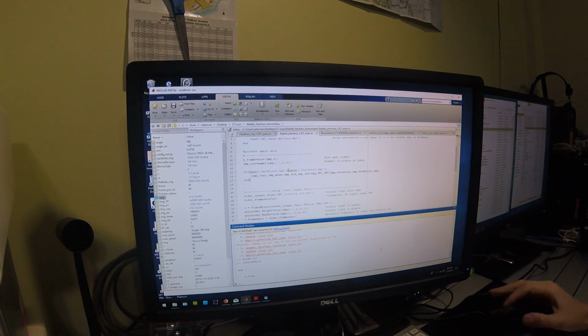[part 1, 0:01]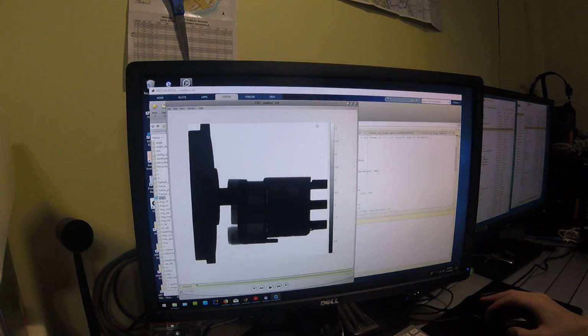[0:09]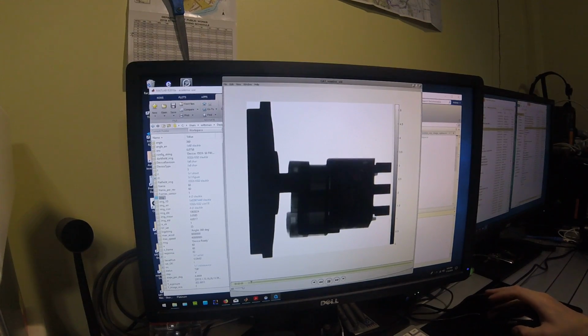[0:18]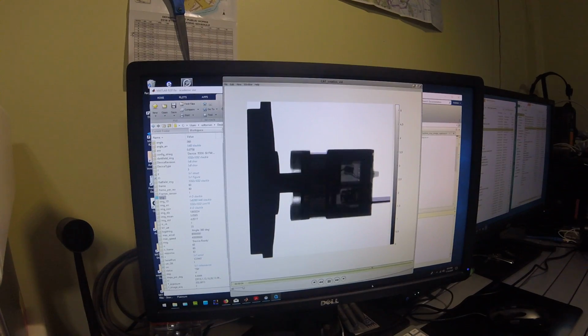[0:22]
Taking a look at the actual CAT scan data, first we'll have a look at the raw X-ray frames. And these actually have been processed for dark field and flat field correction. So these are the 60 frames of that switch that were taken. That's that switch base rotating around on the stepper motor.
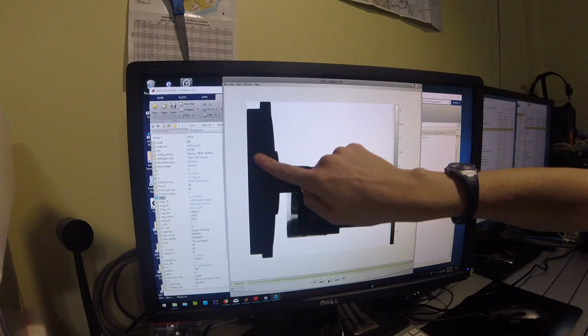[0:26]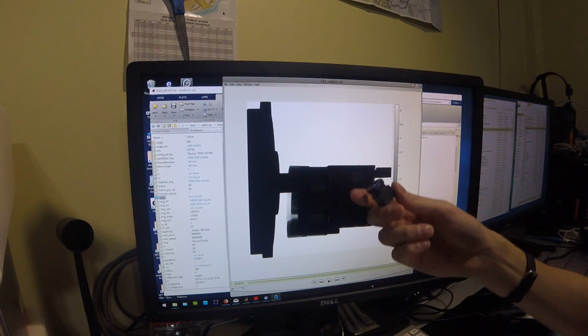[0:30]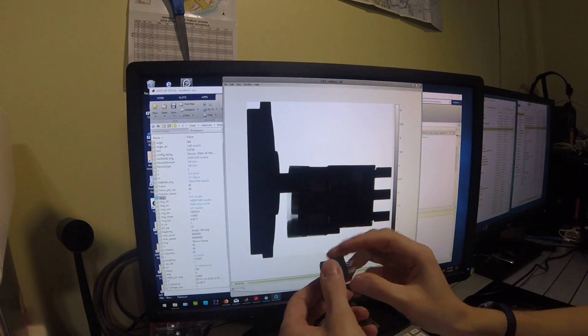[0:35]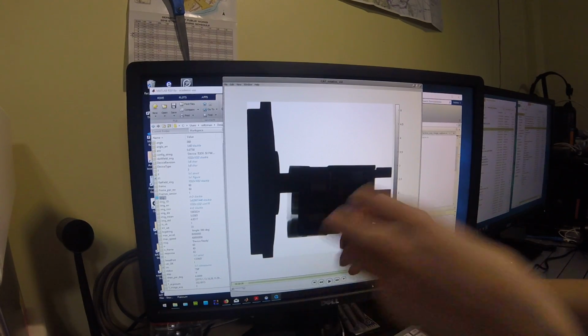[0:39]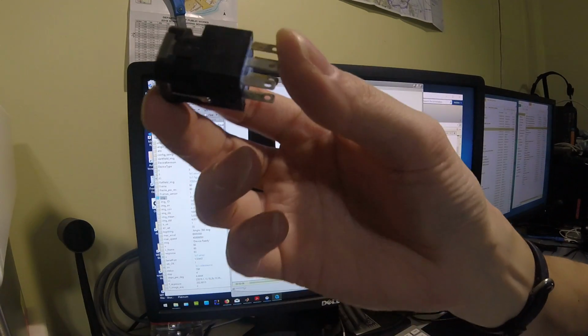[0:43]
So here is the stepper motor itself, the stepper motor drive shaft, and the switch. Here's the base of a similar switch. This one's slightly different in that it has two rows of solder tabs instead of one row of solder tabs. But this would be basically the device that is being scanned and being rotated around.
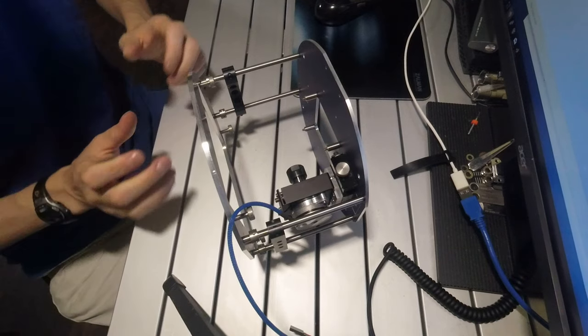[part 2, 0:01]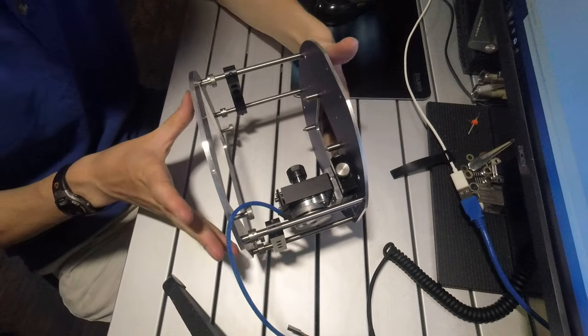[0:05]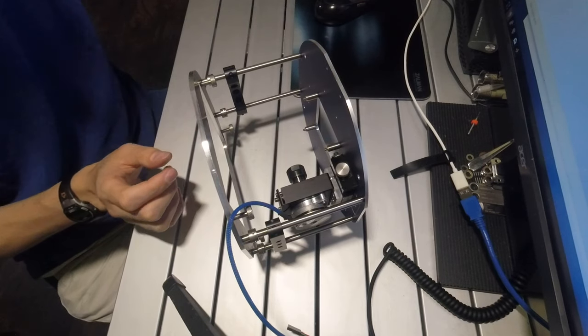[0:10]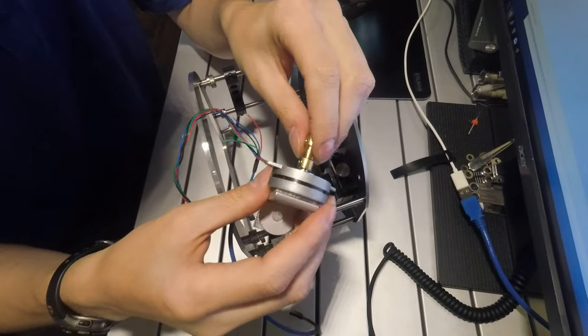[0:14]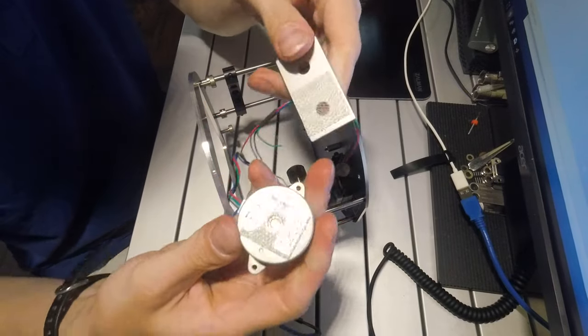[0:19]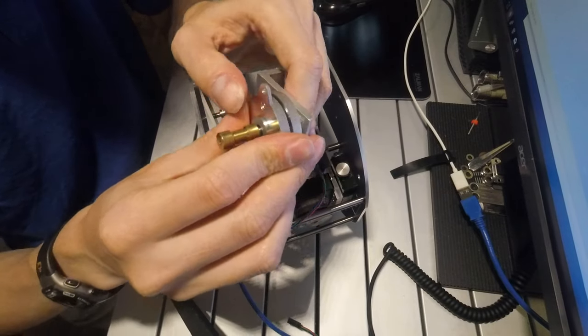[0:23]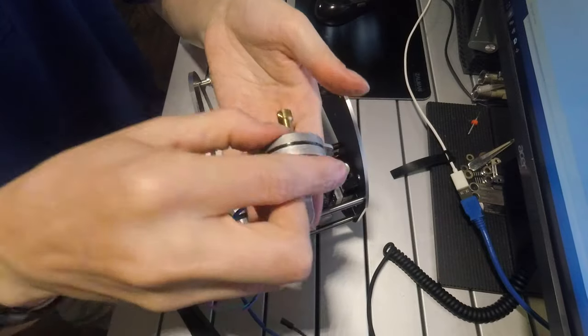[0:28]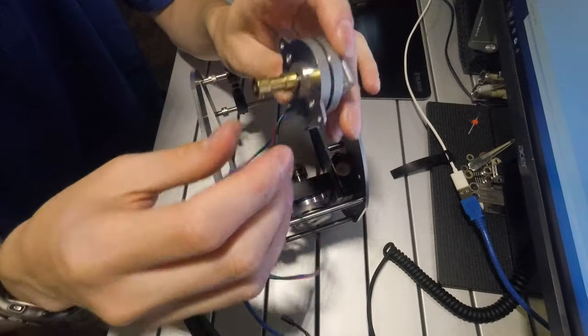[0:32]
Right, so the latest upgrade to the CT scanner is an insertable scanning stage for the Faxitron X-ray machine. Previously, the object to be scanned would be mounted on the spindle of a stepper motor, which was attached via 3M Dual Lock, basically a high-tech Velcro, to an L bracket, which was then 3M Dual Locked down to the base of the Faxitron X-ray imaging chamber.
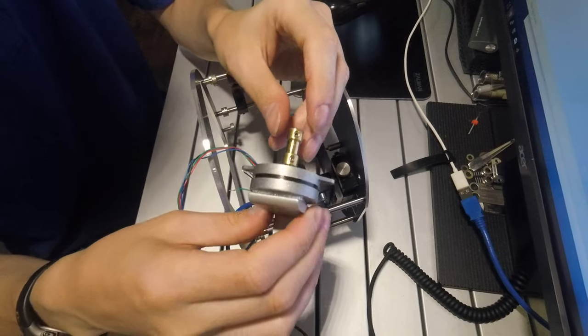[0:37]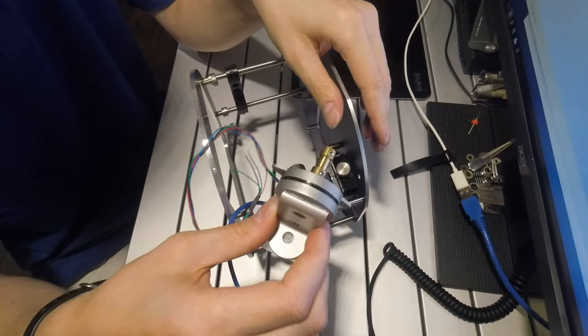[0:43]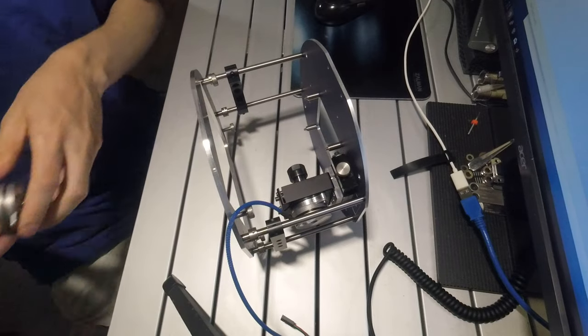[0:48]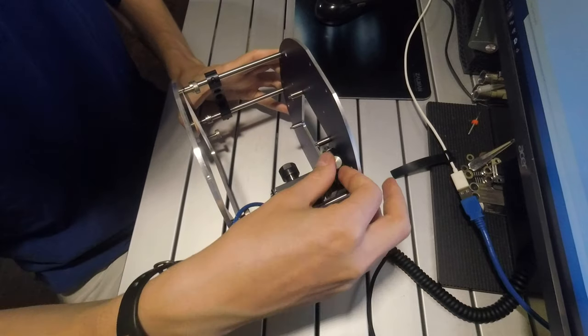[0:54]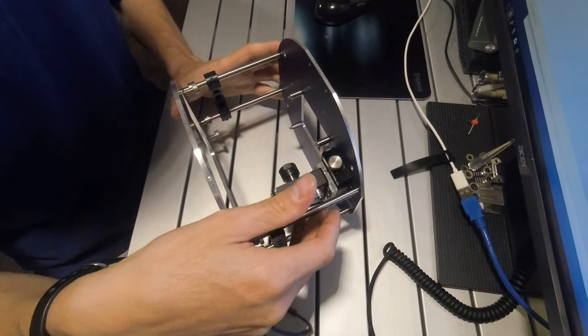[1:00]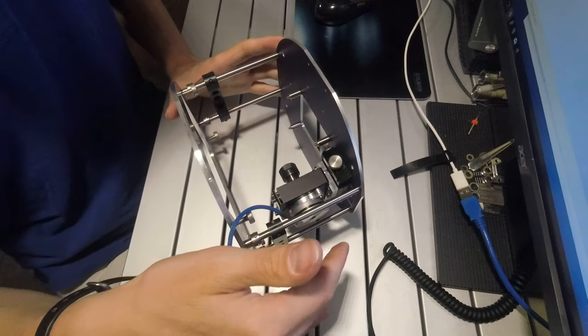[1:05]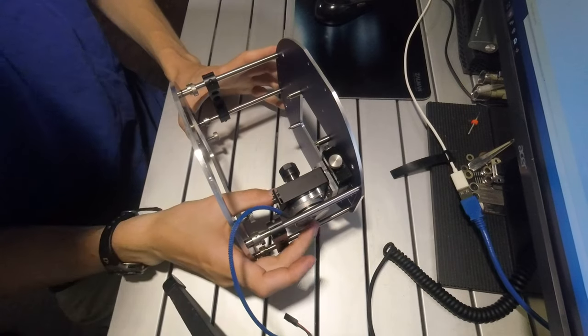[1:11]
Now, the problem with that is this: it's hard to get the rotation axis aligned perfectly with the middle of the sensor and perfectly aligned within angle, both up, down, and left, right. So to fix that alignment issue, I've designed an insertable stage, which uses translation stages and a kinematic optics mount to assist in the precision adjustment of the rotation axis of the stepper motor in order to make it perfectly perpendicular to the axis of the imaging sensor and perfectly centered.
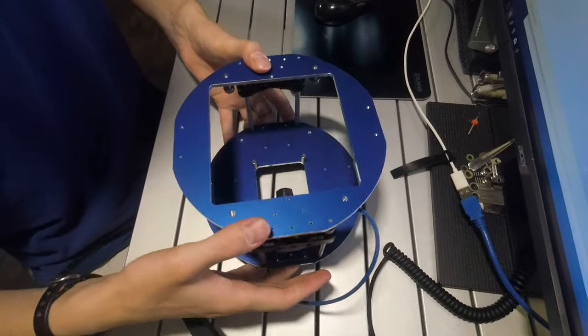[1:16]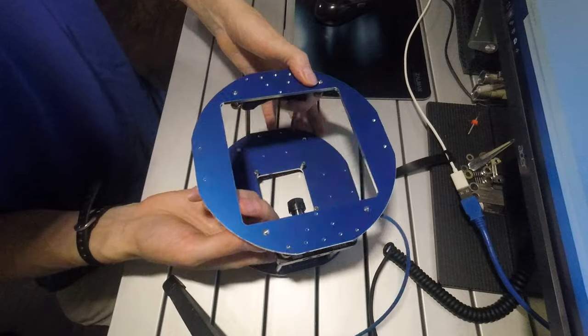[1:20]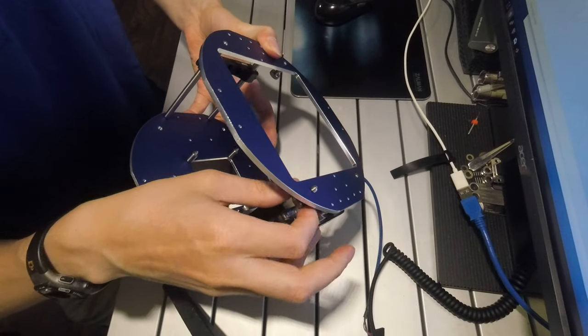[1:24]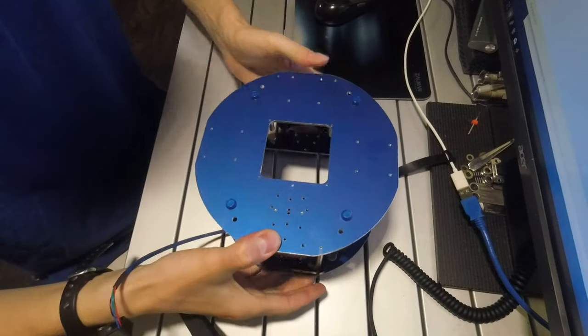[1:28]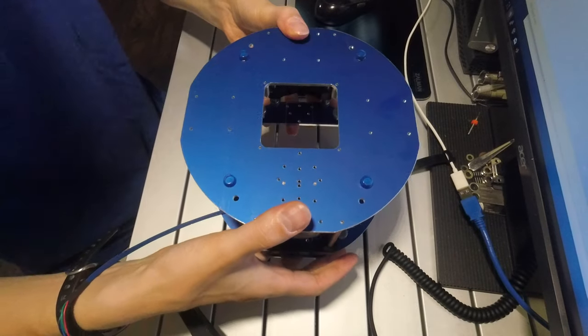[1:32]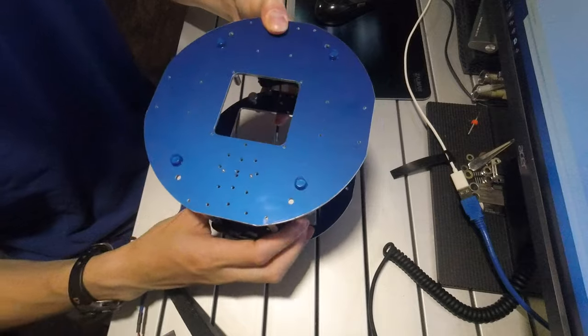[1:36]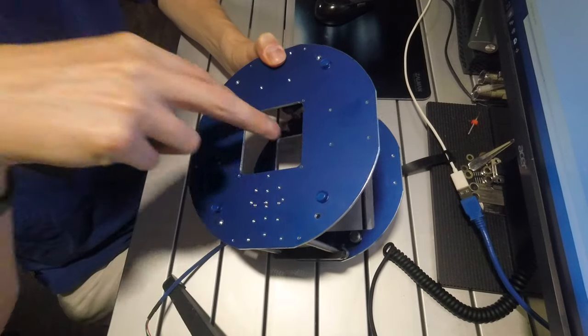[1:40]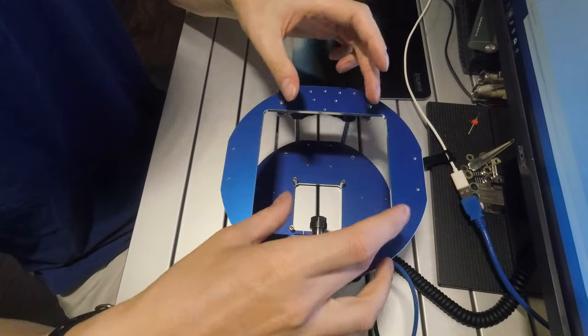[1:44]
Now, the stage is constructed out of two layers. It has a bottom layer with some set screws, which screw down to fix it into the base, and a top layer, which has some rubber feet, which is pressed upward against the top of the Faxitron DX50. It has a cutout hole in the center for the X-ray beam to come down, and a cutout hole in the bottom for the imaging sensor.
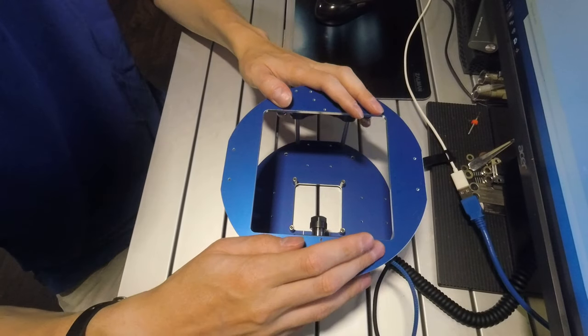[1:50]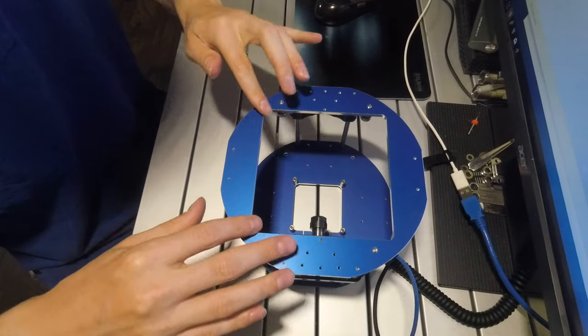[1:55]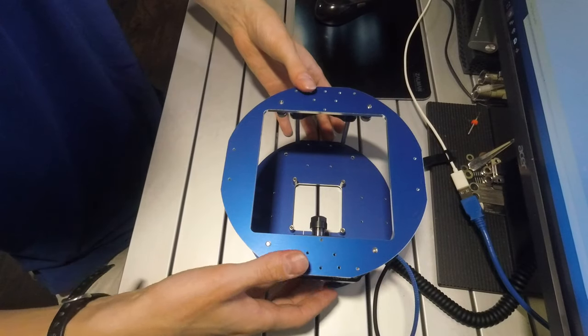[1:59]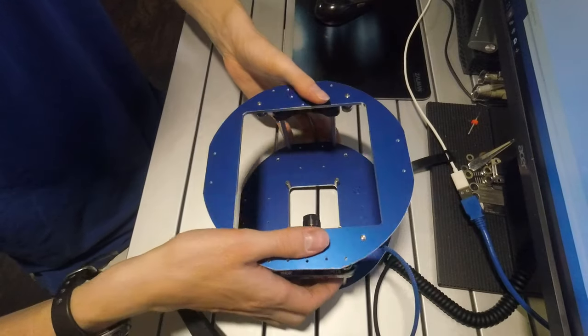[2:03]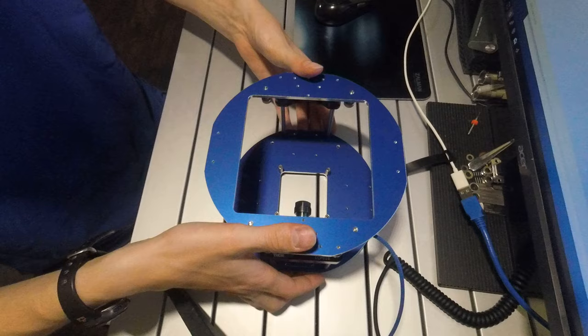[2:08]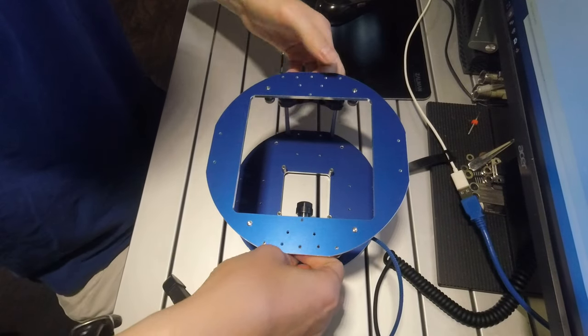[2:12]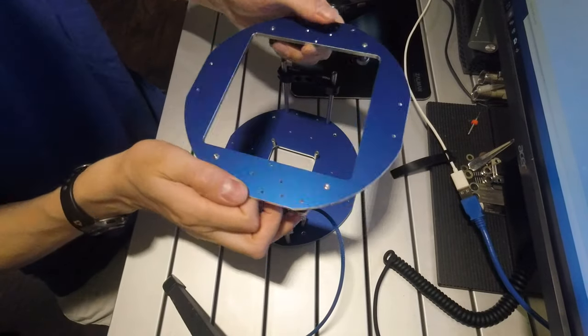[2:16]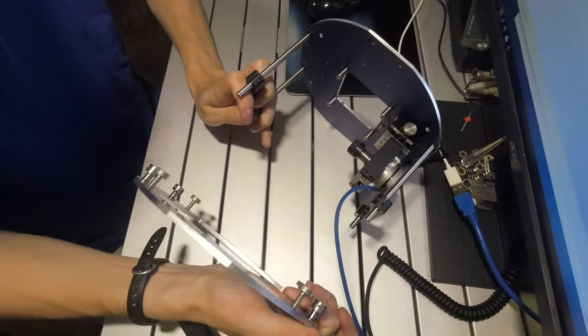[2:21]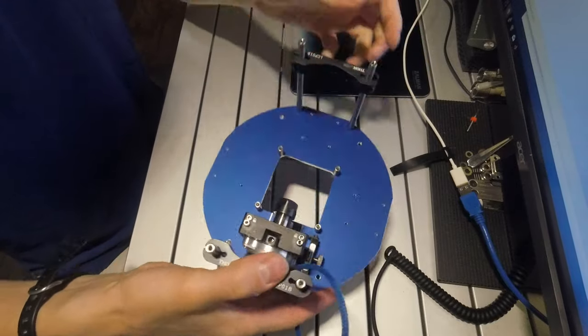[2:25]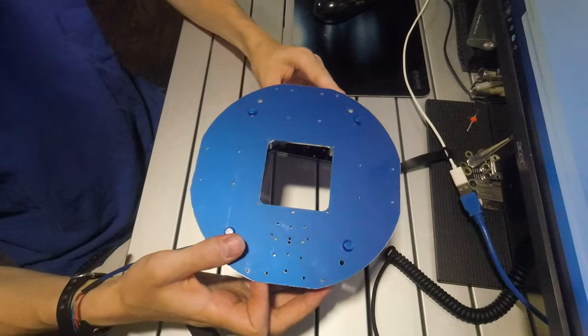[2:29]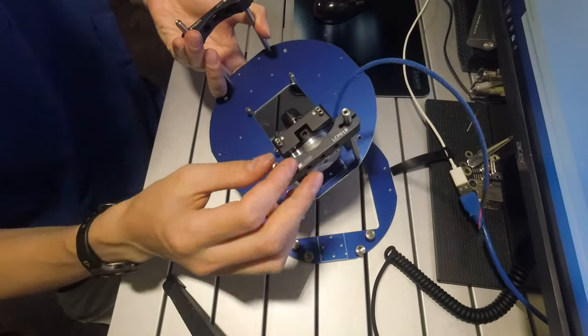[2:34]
Now, on the Faxitron DX50 that I'm using right now, it has a 50mm by 50mm imaging sensor. This is designed to also allow it to be used in the 120 by 120mm version of the Faxitron with the larger Hamamatsu sensor. Now, because the imaging chamber has a little lip in it, this is installed in two parts. First, they separate, so the bottom and top of the stage come apart. First, the bottom is inserted in, then the top section is inserted in and raised up a little, and then it comes down, and the ends of these rods insert in these sockets.
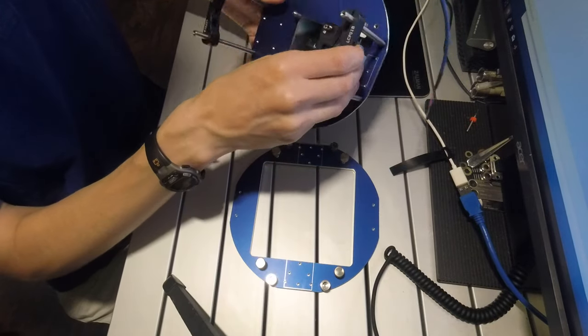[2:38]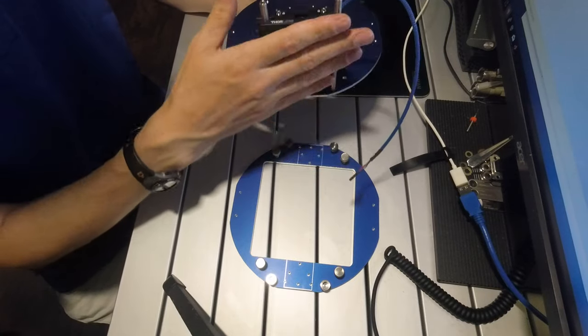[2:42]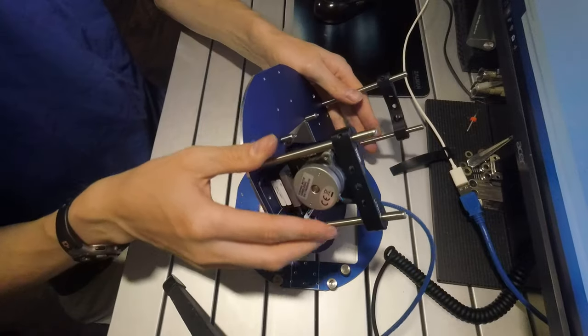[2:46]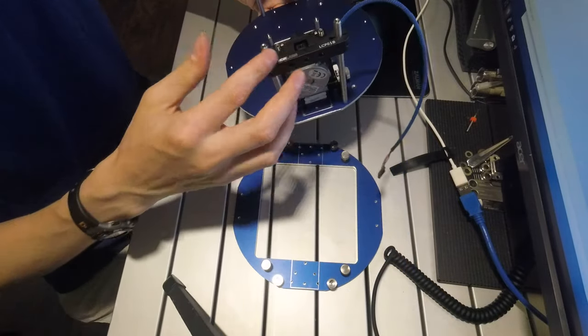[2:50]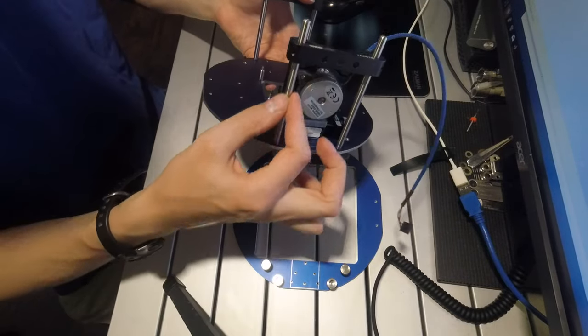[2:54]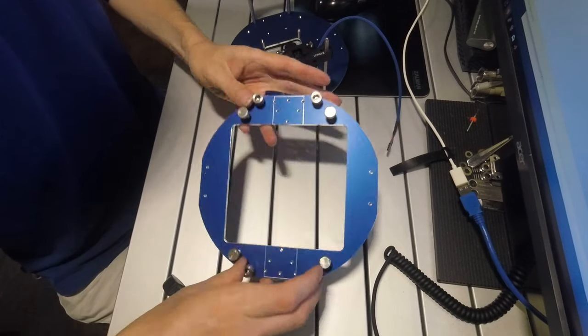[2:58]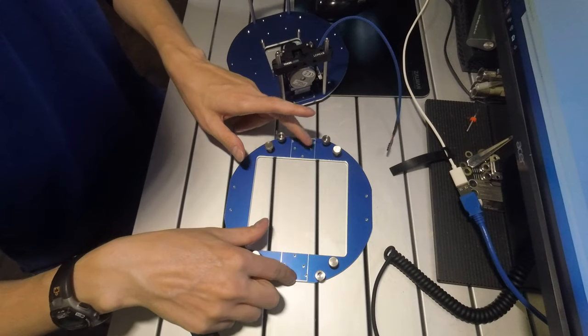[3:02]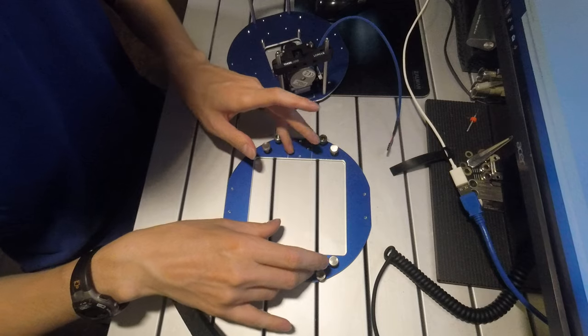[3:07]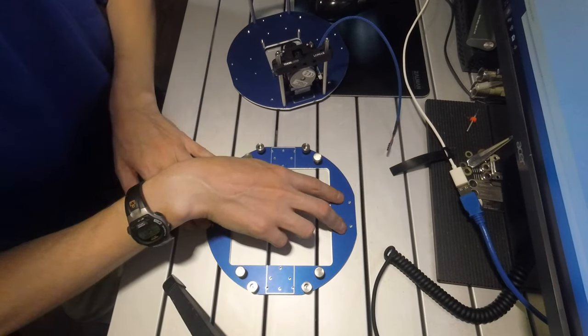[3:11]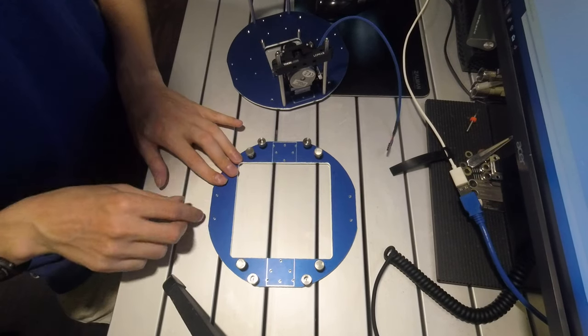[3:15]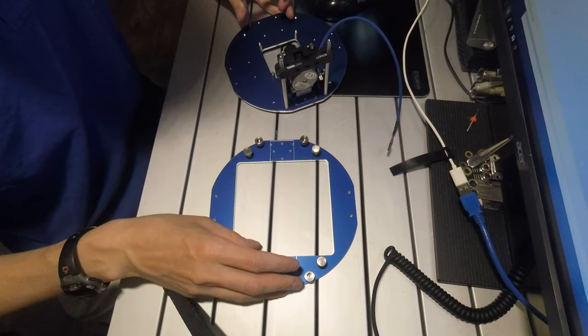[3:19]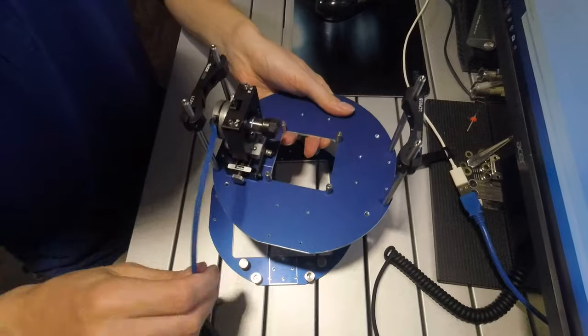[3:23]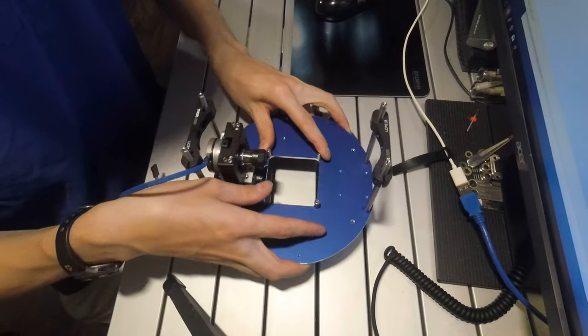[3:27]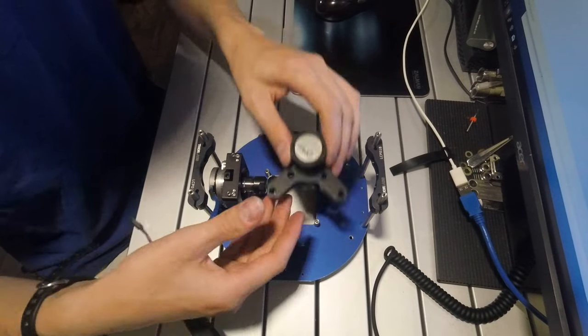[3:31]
Now, all of this mounting hardware, these are Thorlabs cage components. So the two sets of two bars on either side to hold the two stages apart are 60 millimeters apart in the Thorlabs 60 millimeter cage system, which uses the 4 millimeter rods, and then these sockets are also for the cage system. It has two mounts on the bottom for a Parker linear stage, which are not used yet but are available for future upgrades, and it also has two sets of 4-40 threaded holes. Each of these are 30 millimeters apart to hold Thorlabs' 30 millimeter cage system components. And on the top, it has a 60 millimeter cage frame here to assist in the installation of a collimator.
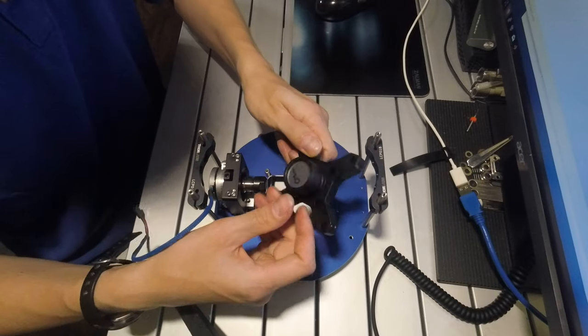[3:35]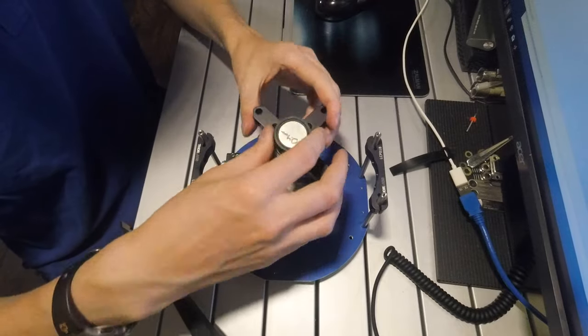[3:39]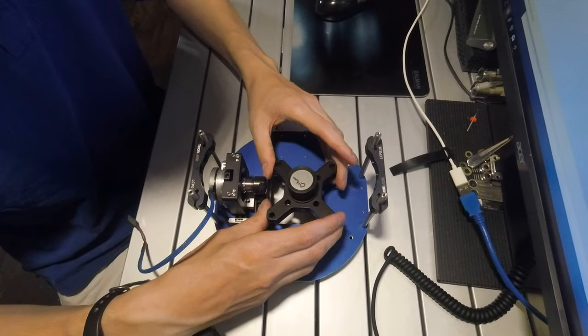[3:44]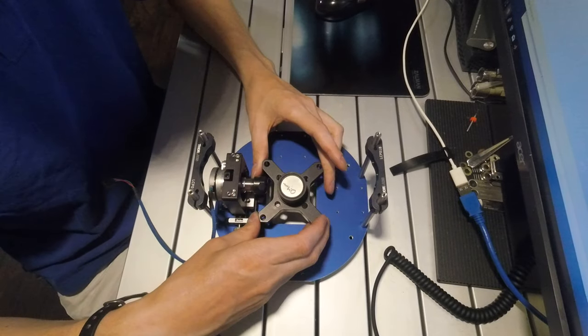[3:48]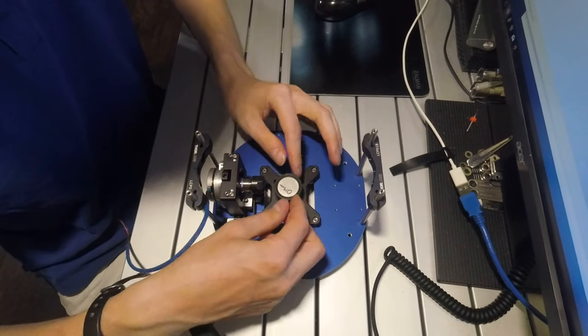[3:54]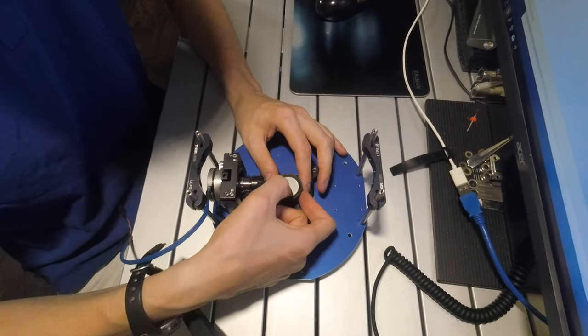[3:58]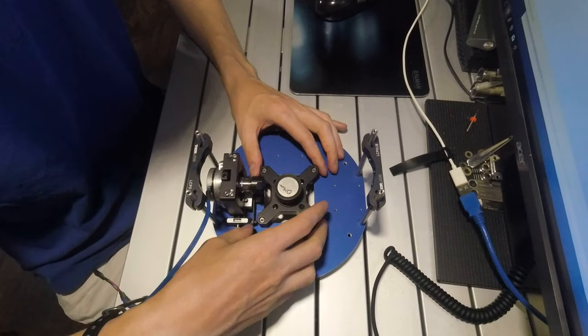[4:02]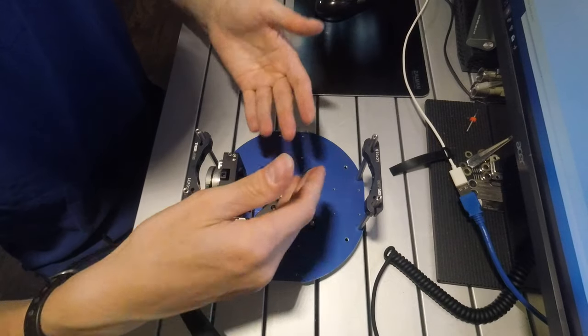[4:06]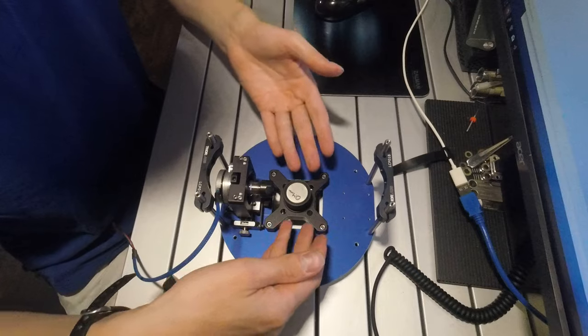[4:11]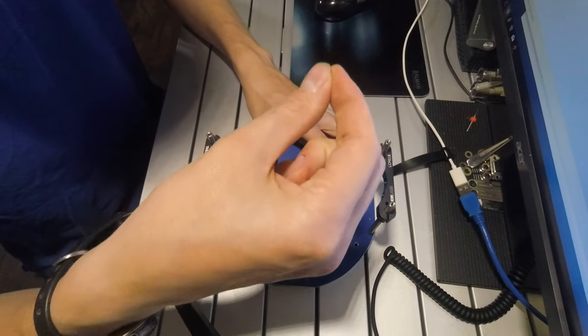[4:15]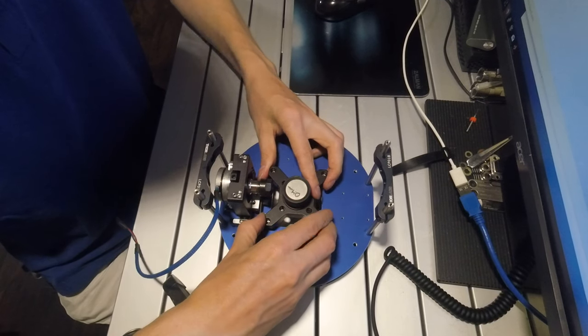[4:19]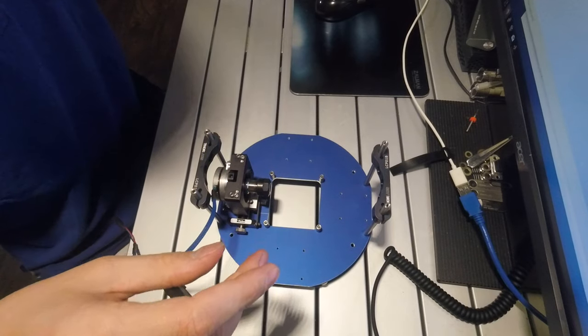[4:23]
Now, the collimator will be used for future analysis of materials. Hopefully, I'll be able to do some X-ray fluorescence analysis by installing a cadmium zinc telluride or other energy-sensitive detector. So when this would be installed, this would basically restrict the X-ray beam with a 0.4mm aperture. So you just have a needle-fine beam coming down right in the center of the sensor. So you could, like, take an X-ray of a material or object, adjust it so whatever you want to analyze is in the center of the sensor, then insert the collimator, and then put the X-ray beam onto that and detect X-ray fluorescence for materials analysis.
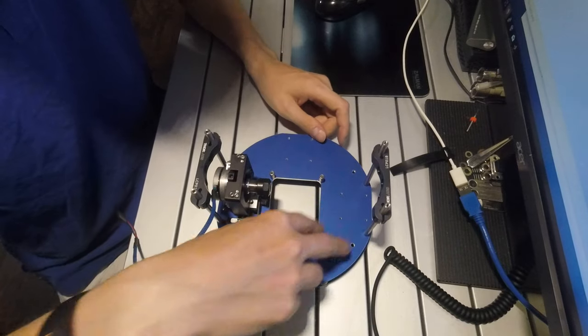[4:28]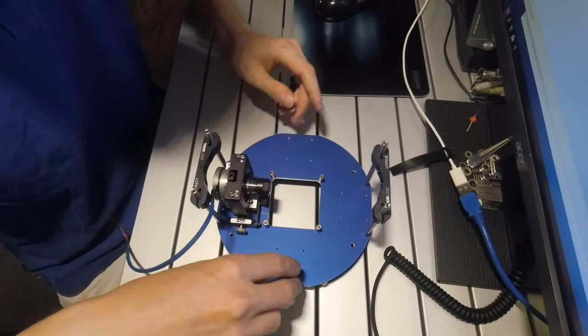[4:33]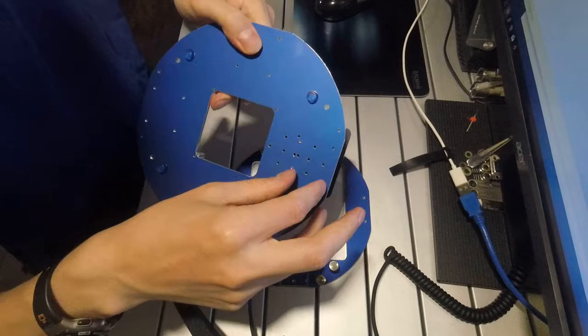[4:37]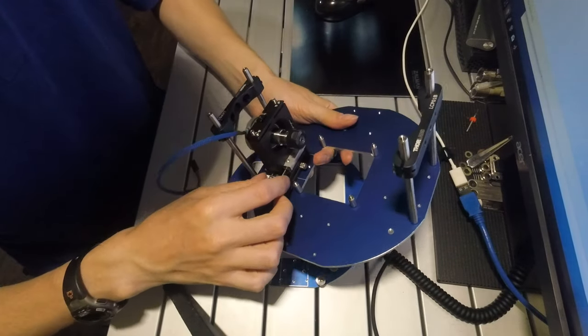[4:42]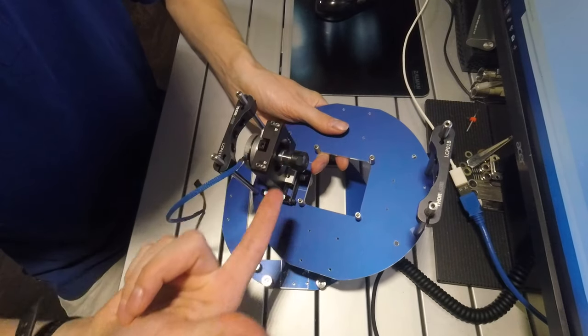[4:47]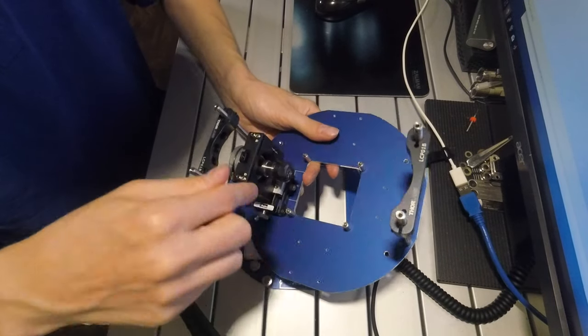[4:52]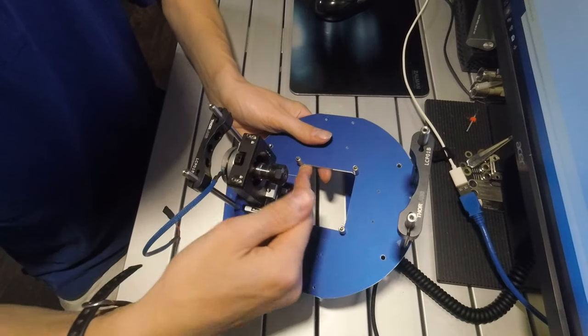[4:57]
And this also has four sets of four 30mm holes for Thorlabs' 30mm cage plate. The other one is under here, so this also has two positions for the Parker stage. So with the Parker stage, you can turn the adjuster knob and drive the stage in and out of the machine to align the center of the rotation axis with the center of the X-ray sensor, and you can also adjust the tilt of the stepper motor up and down and left and right.
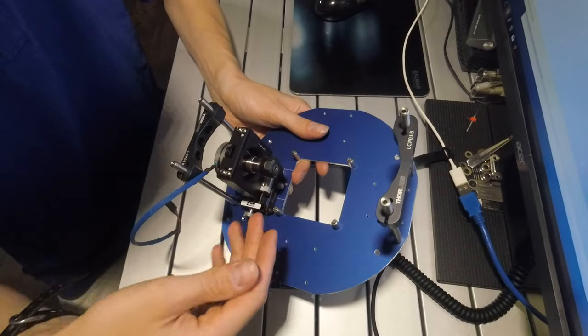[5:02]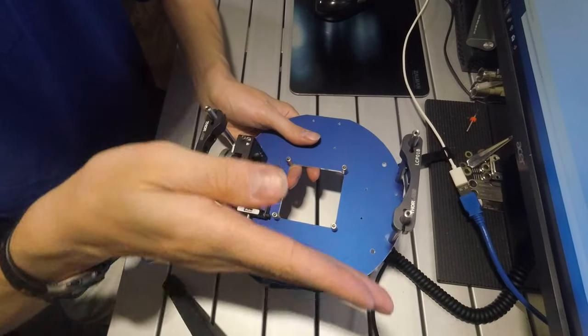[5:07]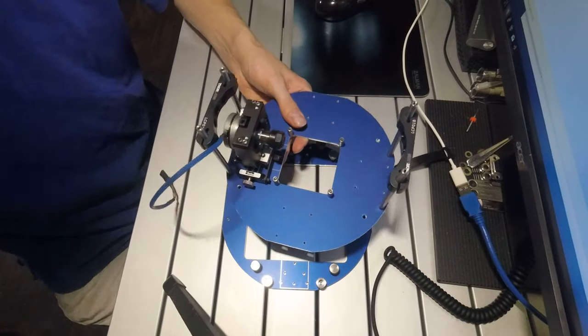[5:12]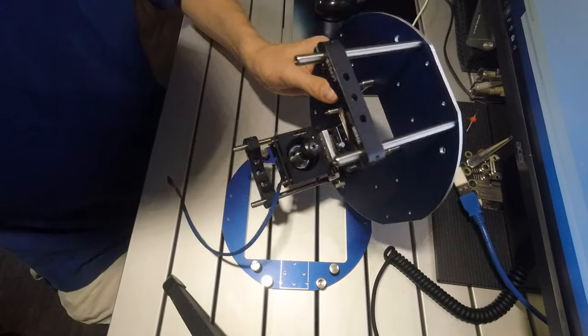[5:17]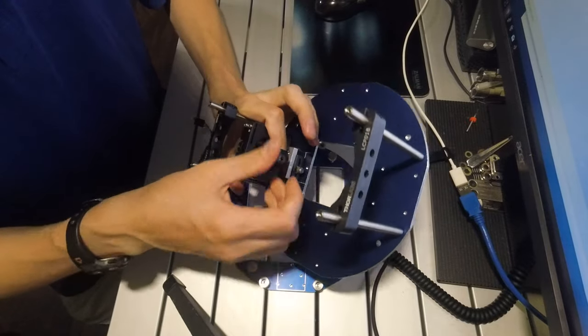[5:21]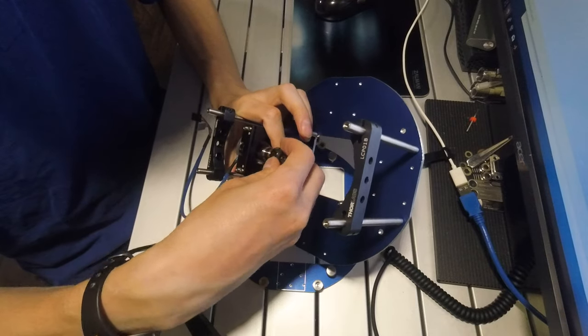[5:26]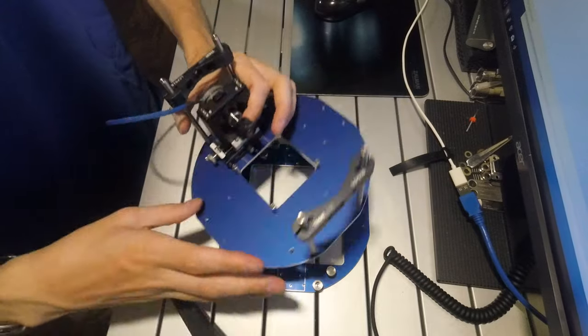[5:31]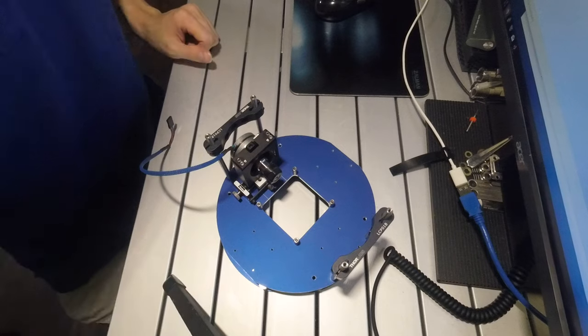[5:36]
So that not only is it aligned in the center, but it's also aligned perfectly perpendicular to the y-axis of the sensor. And instead of just having a set screw like on the old stepper motor mount, this now has an ER11 collet system. Right now it's outfitted with a 1/8-inch collet, but the collets are removable, so this gives you better flexibility in mounting different sample sizes. So next I'll have another video showing how to insert the stage into the Faxitron X-ray system.
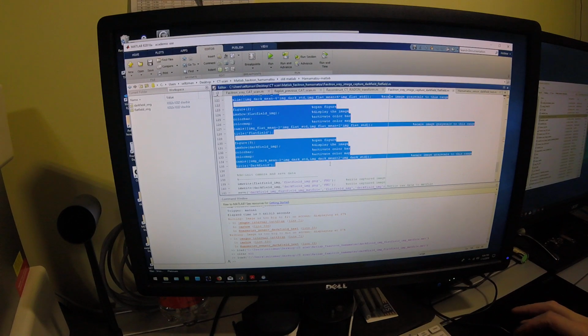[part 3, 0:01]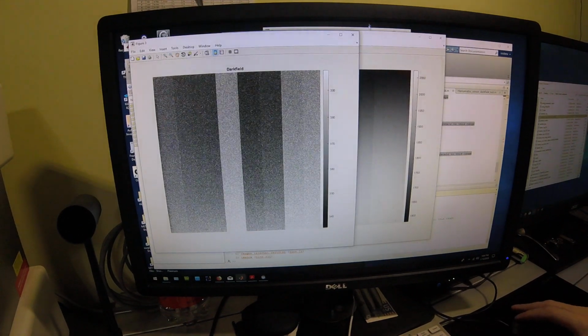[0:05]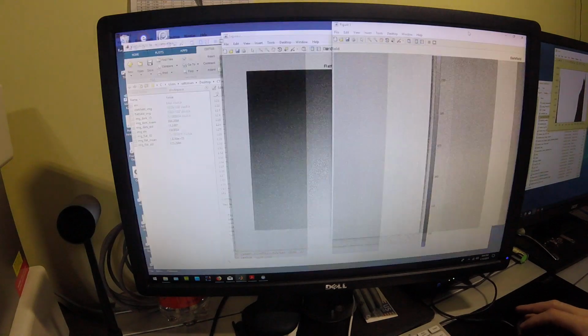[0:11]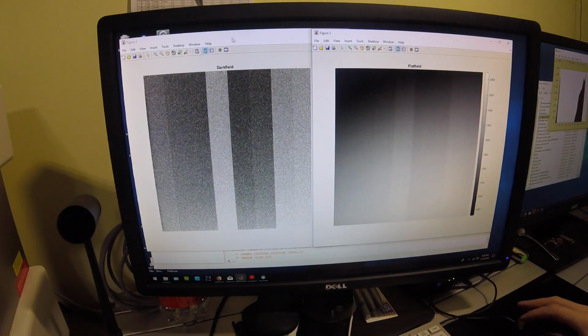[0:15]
Plotting routines into the input. Okay, so now what we have is two images. We have the Darkfield image here and the Flatfield image here. So the Darkfield image, again, the color axis is just expanded. This is from around 330 to maybe 400
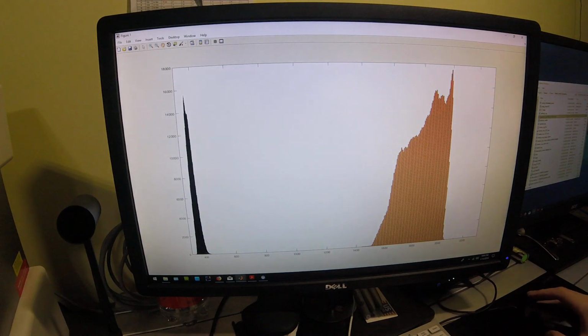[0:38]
counts for the Darkfield, and the Flatfield is from around 1550 to 2100 counts. If we take a look at a histogram, we can see the two different histograms between the Darkfield imaging and the Flatfield imaging. So anything between here and about here is useful signal, which can be used to actually generate that image data, and above that, you're not going to get any counts above that.
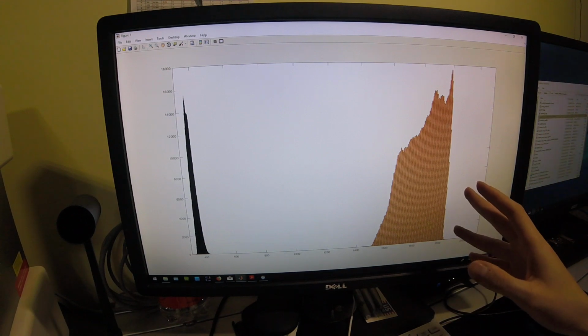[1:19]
That's just a limitation on the power of the X-ray tube. This is a very low power X-ray tube. It only goes up to 35 kV and 0.1 milliamps. So it's very, very low power. To get this to around 65,000, you'd need around 32 times the photon flux to saturate the detector.
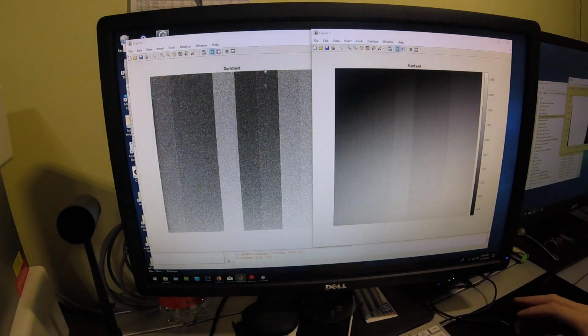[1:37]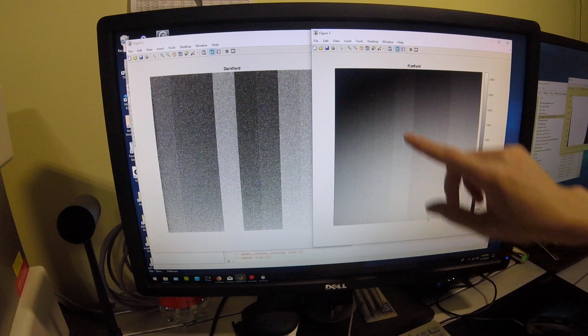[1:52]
So it's well below the maximum exposure that the detector panel can handle, but it still has sufficient power to generate images with very low noise after correction from the Flatfield and Darkfield. So the Darkfield image you've seen before, that's just variation in dark current on the CCD. The Flatfield image, on the other hand, you can see variations in sensitivity over the spatial area of the detector.
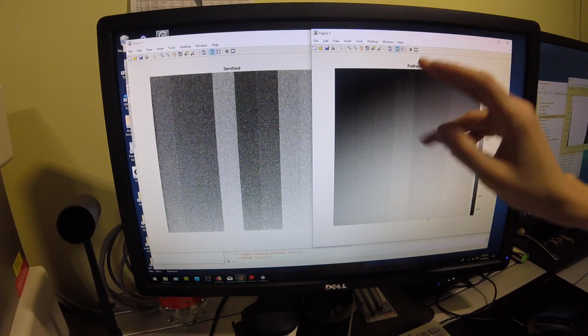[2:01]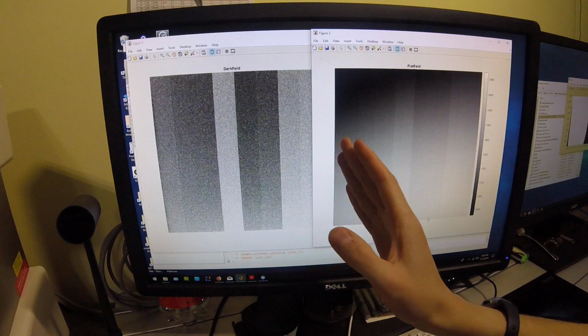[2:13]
This fall off here is likely not due to heel effect, since this is on the up-down axis. Any heel effect would actually show up on the left-right axis, because the angle of the anode cut would be on the left-right, so if there was any heel effect, you'd start seeing it towards the edge of the image, not towards the top. So this is likely due to variations in sensitivity of how much of the cesium iodide scintillator on the detector surface.
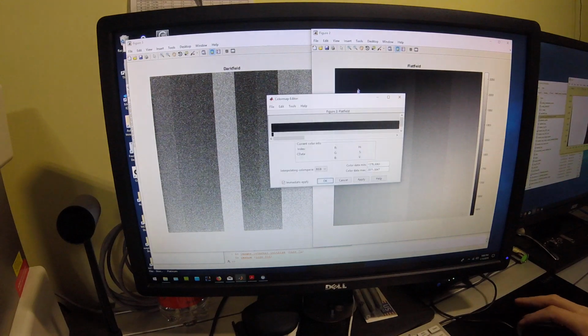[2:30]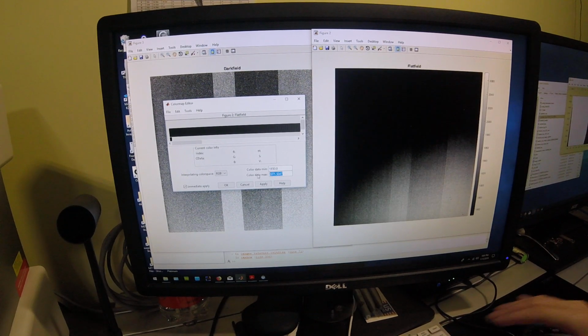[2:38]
Now, one of the things that I do want to show you is that if we open the color bar editor and zoom in really far on the color axis, just go from 1850 to 1940, 1950 perhaps. Okay, and then we're going to zoom in on the Flatfield image. Just maybe a little too far in.
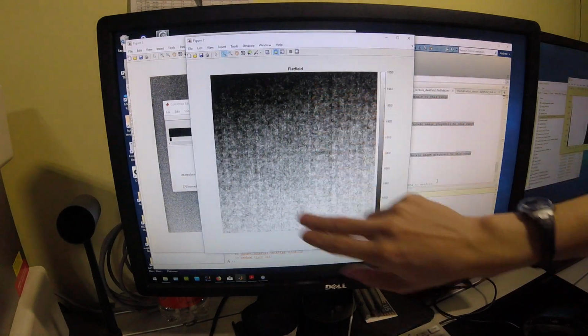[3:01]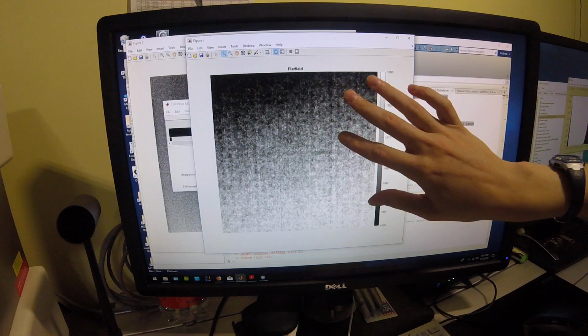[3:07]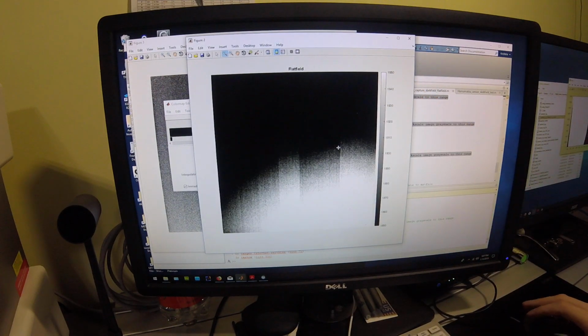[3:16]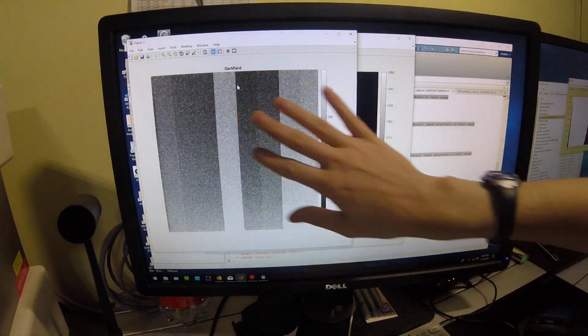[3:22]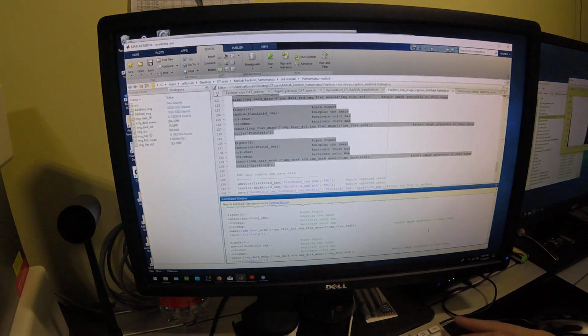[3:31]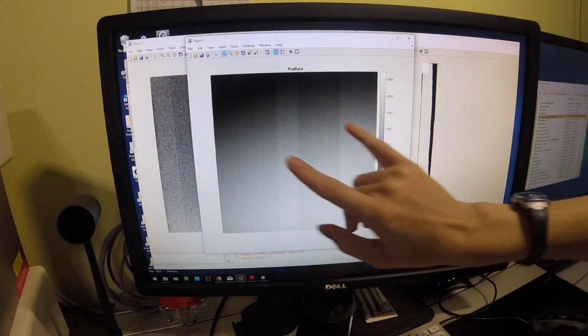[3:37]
Alright, so what you can see here is a hash-like pattern on the image. And this is actually the X-ray absorption of that carbon fiber plate, that carbon fiber sheet that's used to protect the image sensor. And by performing that Flatfield Darkfield correction, you can remove both that Darkfield dark current and the Flatfield inhomogeneity in the X-ray sensitivity. You just remove that mathematically. You can also see that Darkfield variation showing up in the Flatfield image.
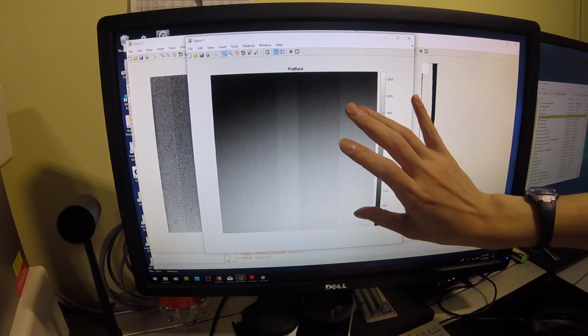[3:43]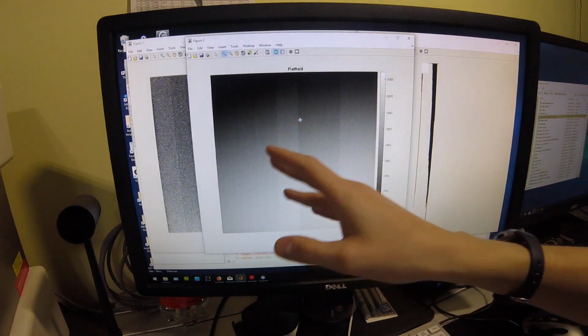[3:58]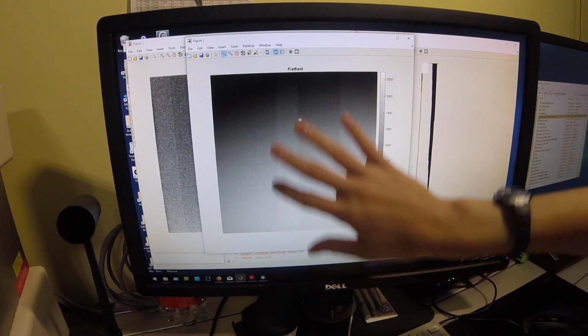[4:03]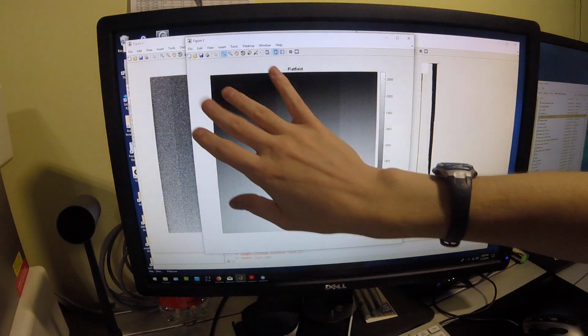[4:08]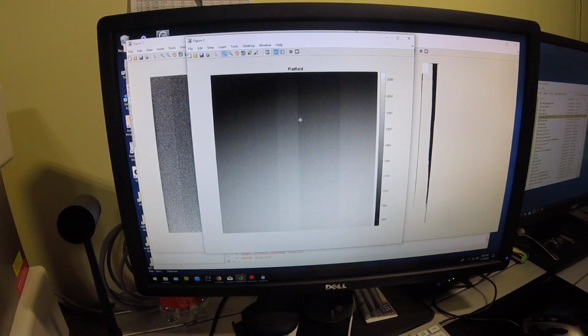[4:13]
So to perform that Flatfield Darkfield correction, what you do is you take an image of an actual object. You would subtract the Darkfield, which removes any dark current, and then you divide that by the Flatfield minus the Darkfield. So that would compensate for that inhomogeneity in any X-ray beam effects and in effects of the sensitivity of the detector and the carbon fiber plate. So that would give you a much clearer image. So that will substantially reduce the noise in the X-ray system.
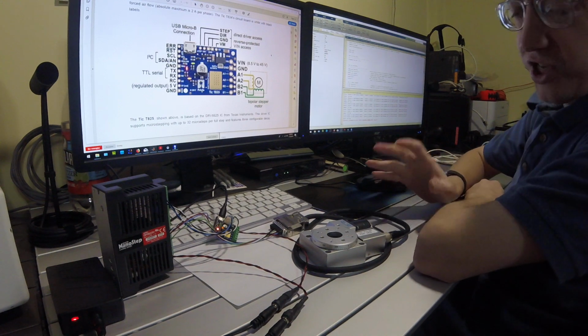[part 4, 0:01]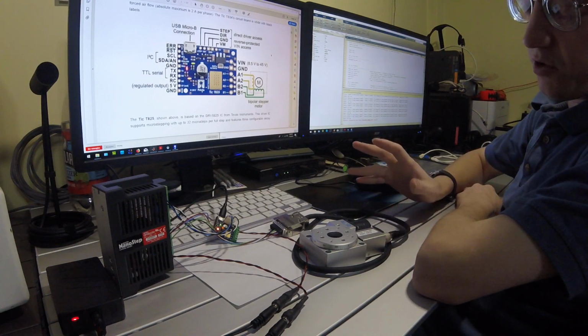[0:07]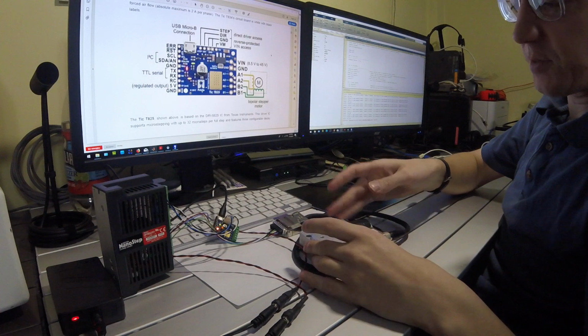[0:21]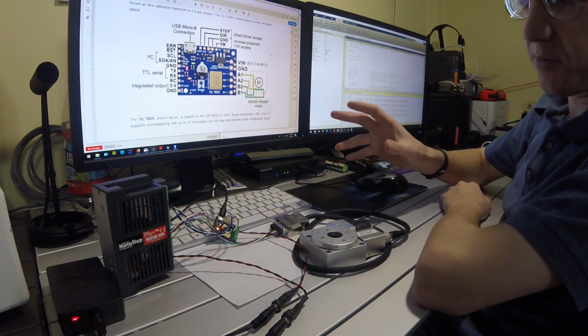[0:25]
So continuing on with the development of the CAT scanner conversion of the Faxtron X-ray machine, one of the things that we're going to need to do is to integrate an automated rotational stage assembly into the X-ray cabinet in order to rotate the object which is being scanned. There's several possibilities to do this. One is with a stepper motor with a right angle gearbox. The other is with just the stepper motor itself.
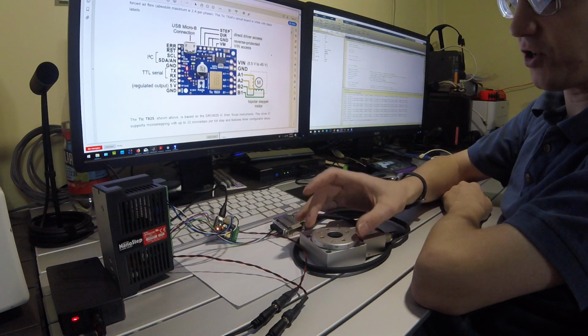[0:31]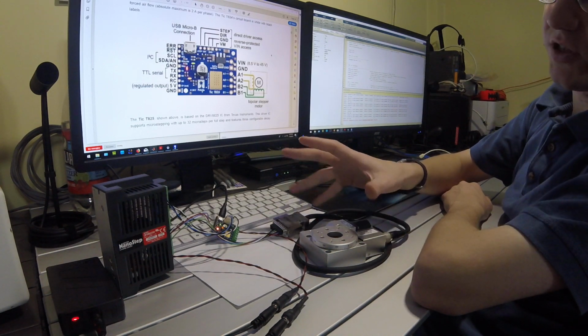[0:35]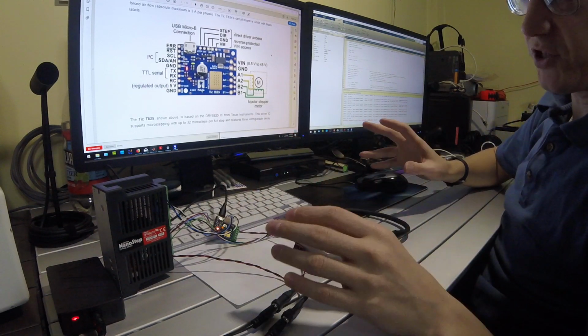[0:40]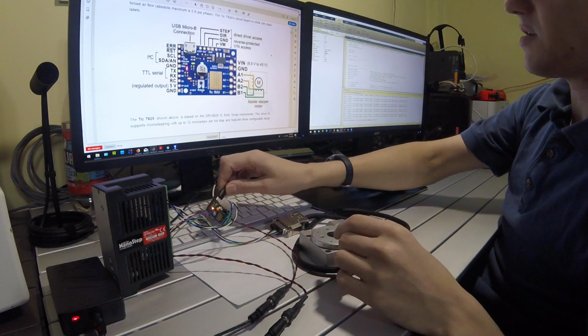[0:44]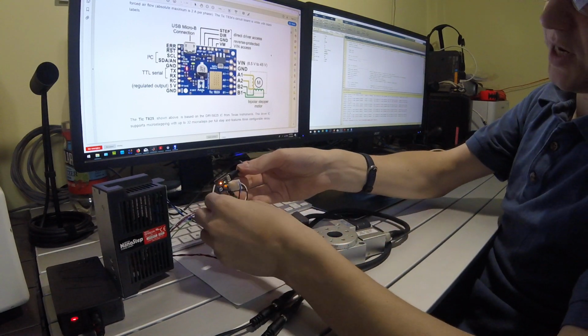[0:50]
The right angle gearbox is obviously going to have a lot more physical capacity to scan larger objects and also potentially a finer resolution, whereas the single stepper itself will be smaller. So to drive the stepper, I've come up with an architecture that uses the Pololu TIC T825 stepper controller. It's a small USB-based board.
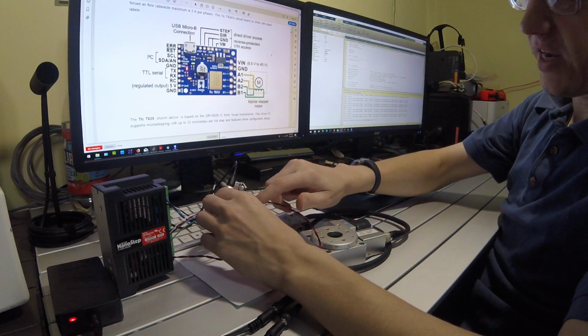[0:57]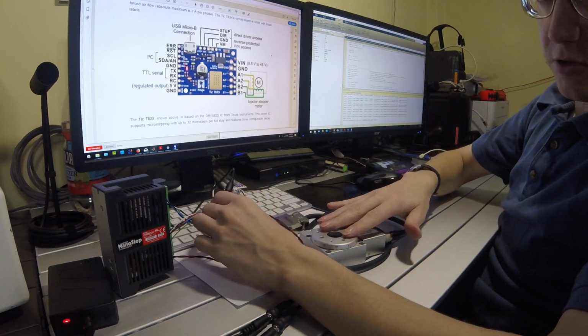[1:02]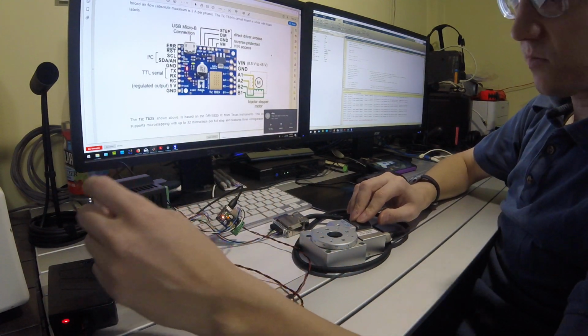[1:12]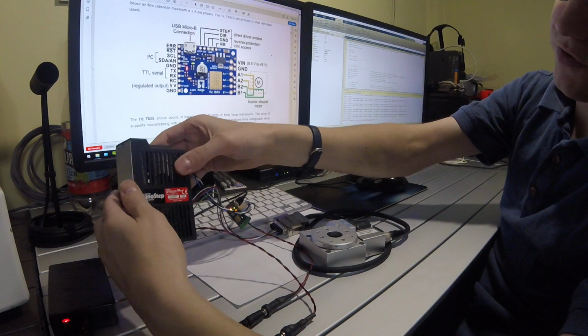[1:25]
Integrated onto the board, there's a two-phase stepper driver for a bipolar stepper motor. However, for this particular stage that I'm testing right here, this has a five-phase motor. So to run that motor, I'm going to need its own independent driver. And so this was a motor by Vexta, and Vexta is pretty much the only manufacturer of, well, at least the most common manufacturer of five-phase steppers. So they also have stepper drivers. So this is a Vexta NanoStep five-phase driver.
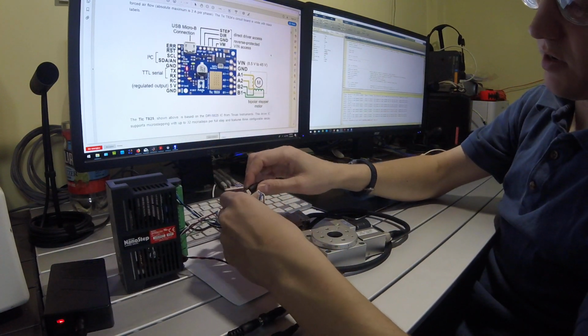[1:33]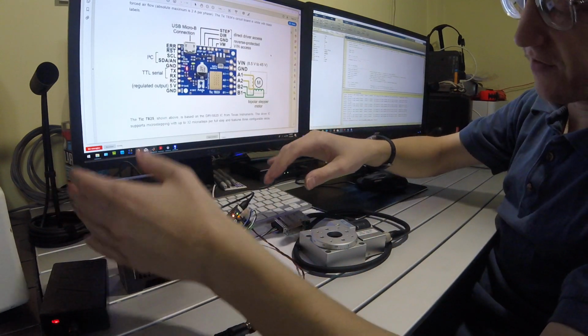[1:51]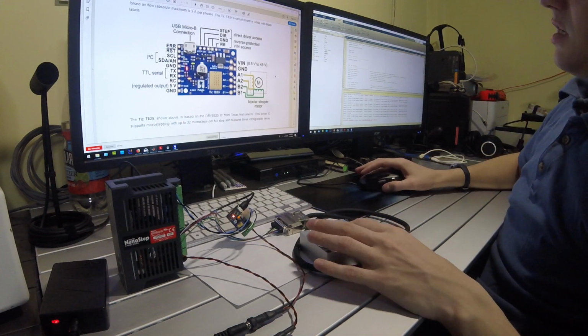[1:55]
The Pololu TIC controller does have step and direction line outputs. So these step and direction line outputs are just going to the NanoStep driver. So that's basically the board just has its own two-phase driver on there, but it's not being utilized when driving this particular stage. So the five-phase driver is then just put onto the stage itself. Now here's the TIC controller.
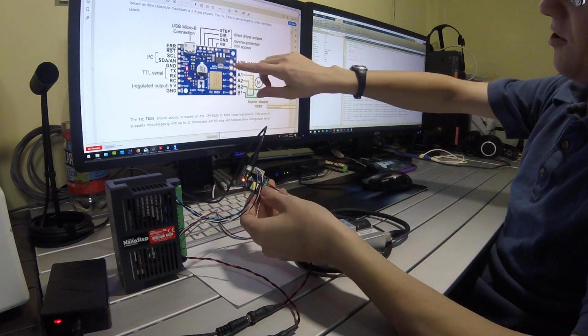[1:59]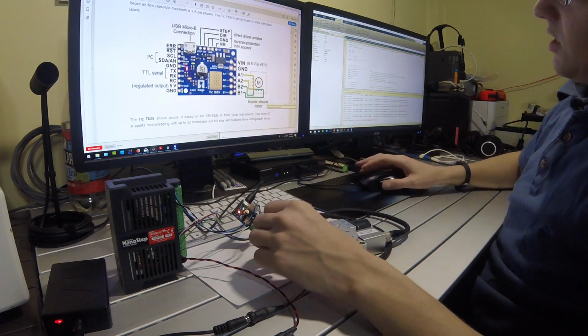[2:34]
So there's the header on this side for power in, which requires 8.5 to 45 volts to drive the stepper controller. And then it also has the outputs to the two-phase motors if you're using a two-phase system. Then the step and direction outputs are at the top, and then you have inputs for remote stepper control if you wanted to use a RC servo input or TTL serial or I2C or analog input. And then it also has the USB interface, which you can drive the stepper controller via a computer. So Pololu does have its own control app.
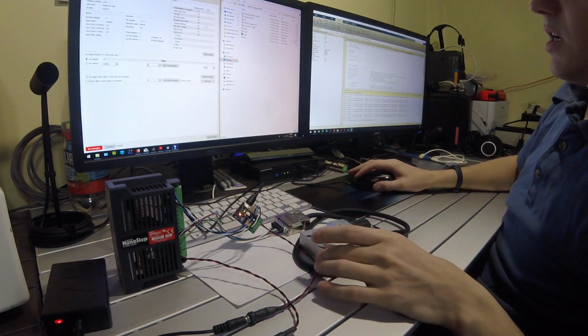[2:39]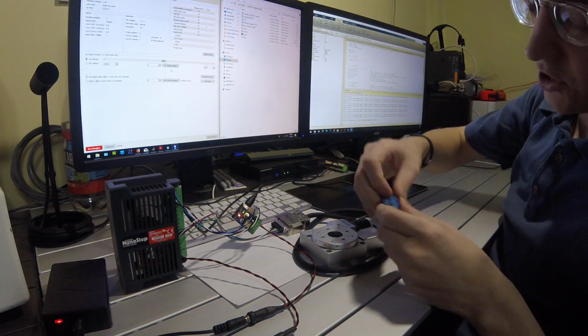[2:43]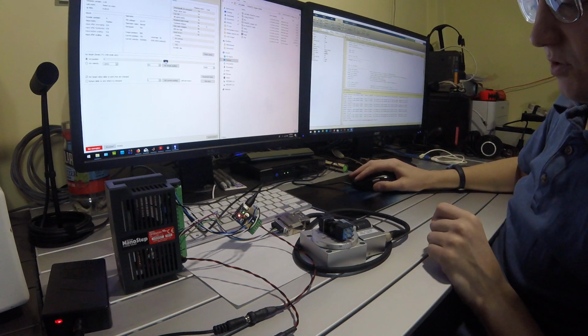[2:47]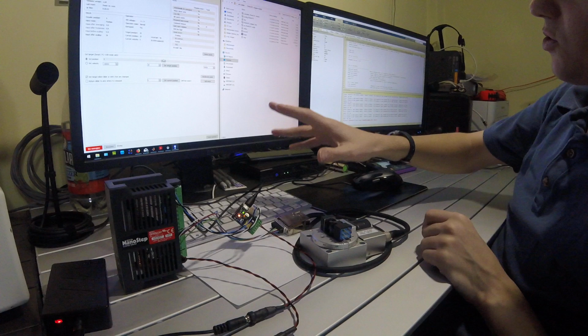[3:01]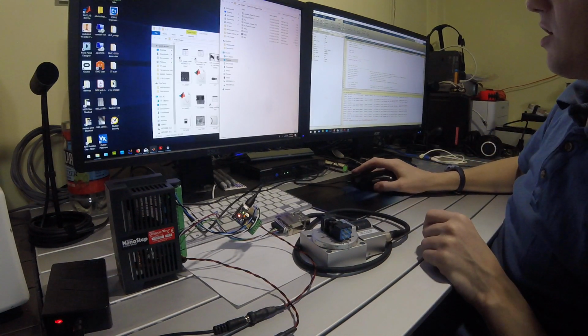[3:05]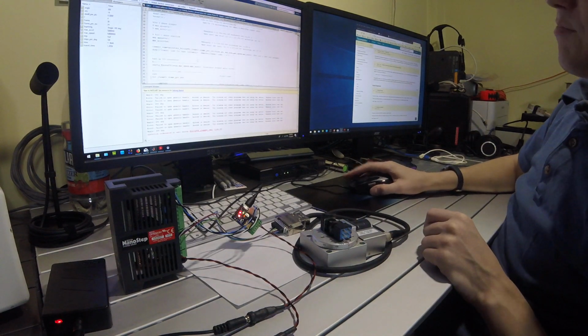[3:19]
So with this, we can control the stepper stage. I'm going to put a switch on top of this stage so you can see it rotate. So with this, you can command the stage to go to various positions and rotate. However, for the CAT scan, we're going to need to integrate this all into one software package. So the Pololu also does come with a command line interface, which is TIC CMD. You can access this over command line, or if you're using Matlab as a development environment, which I am, Matlab does allow you to send commands directly to the command line.
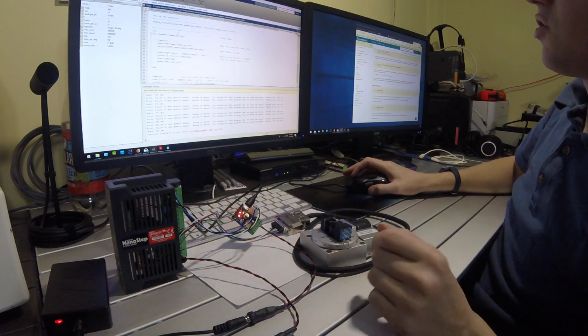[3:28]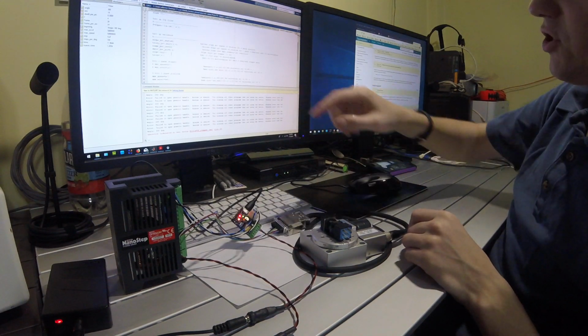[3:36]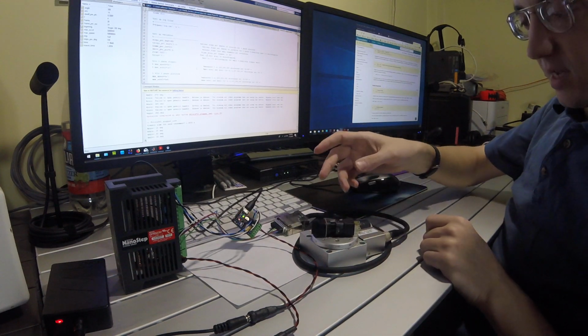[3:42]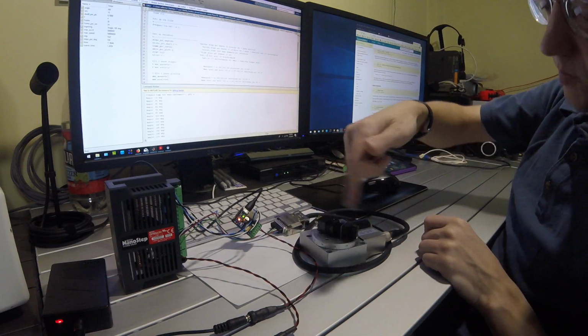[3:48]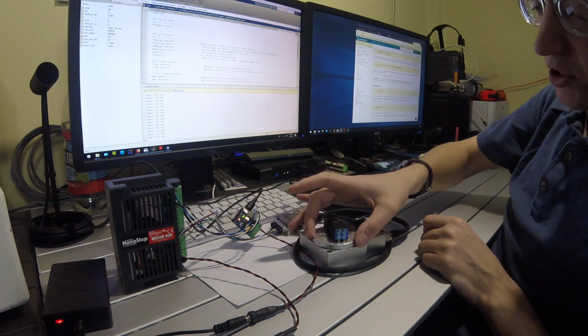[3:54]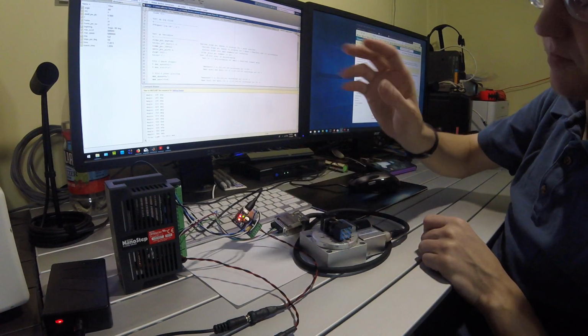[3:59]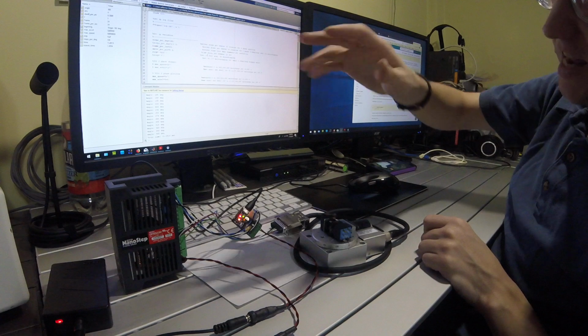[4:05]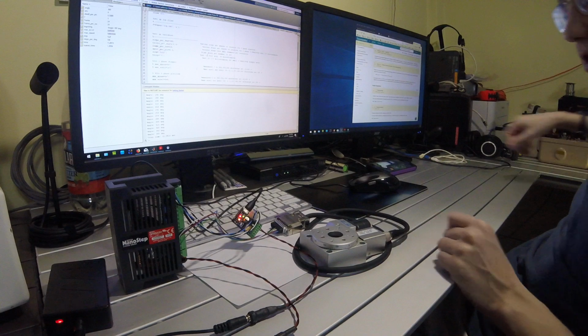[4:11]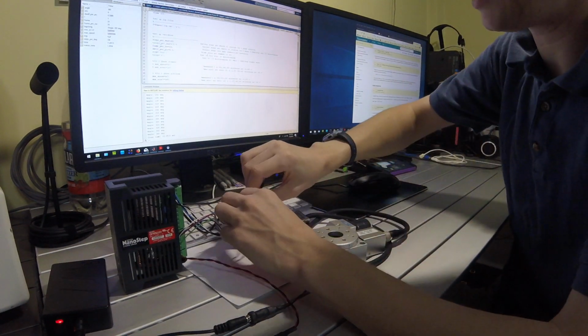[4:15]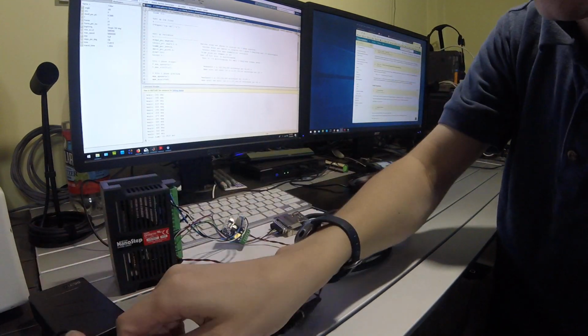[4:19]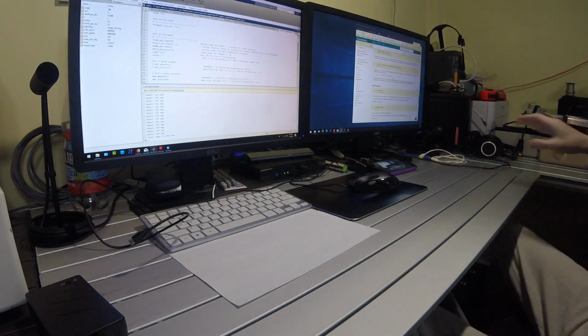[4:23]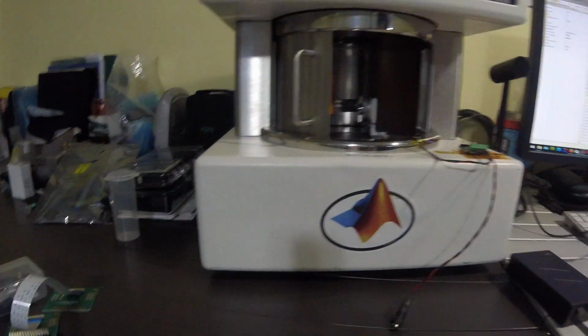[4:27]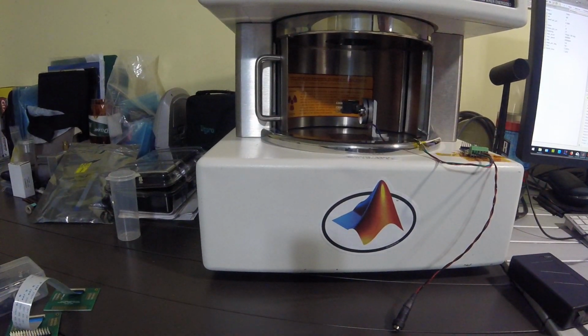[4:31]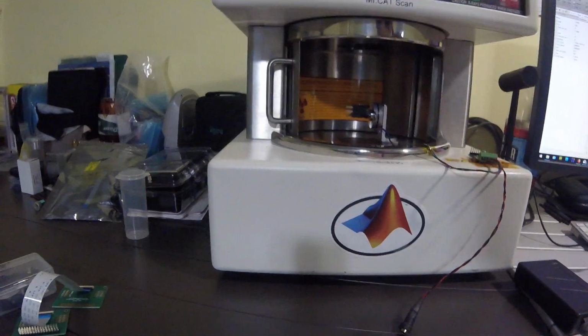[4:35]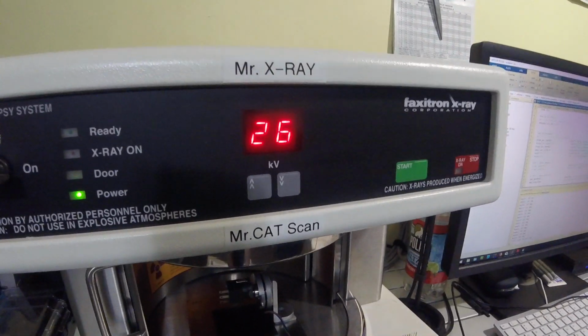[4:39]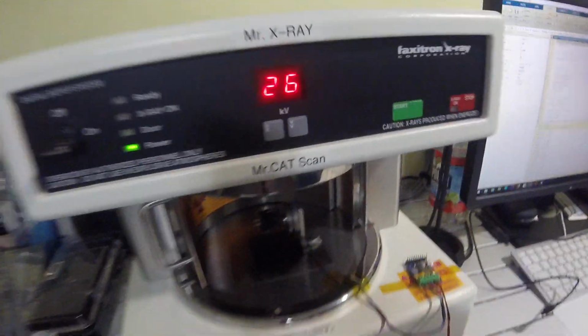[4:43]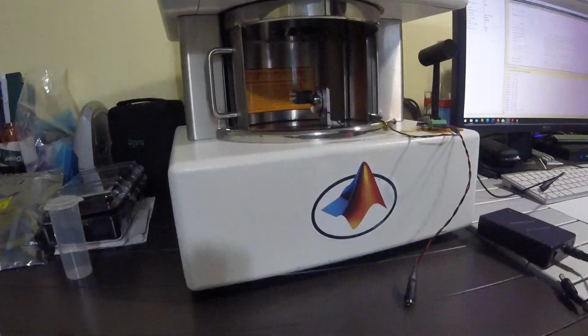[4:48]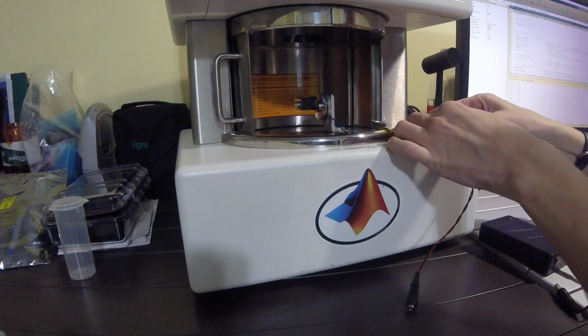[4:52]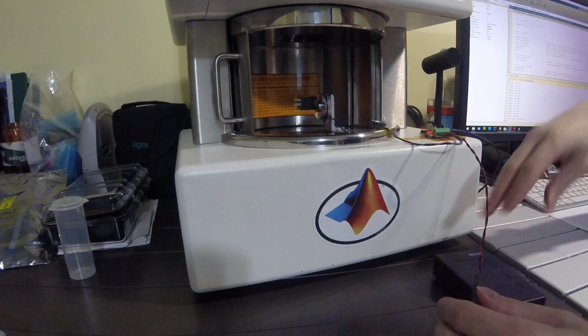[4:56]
So the next step for that is to integrate that into the X-ray cabinet. So for the X-ray cabinet, I actually have configured that with a single stepper motor, as we can see here. So there is, let me see if we can get this in a little closer. Here's another Pololu TIC driver. And it runs the wires in
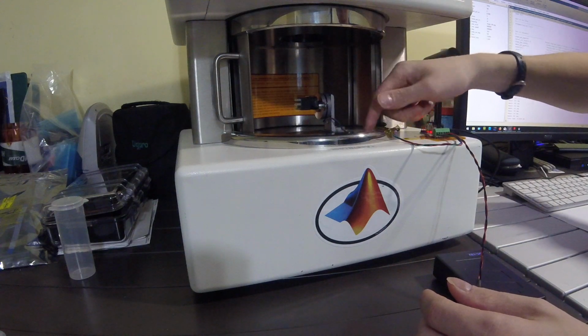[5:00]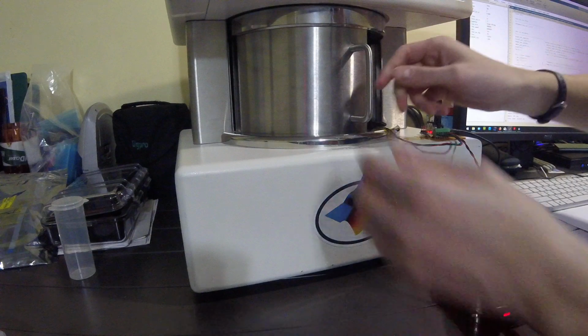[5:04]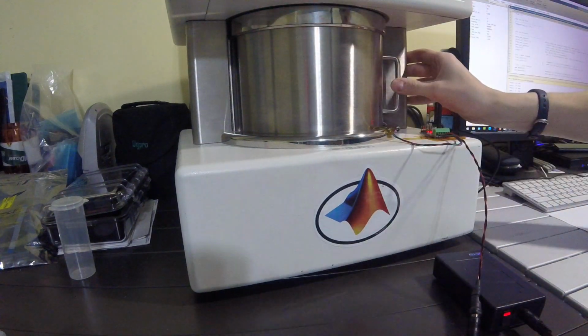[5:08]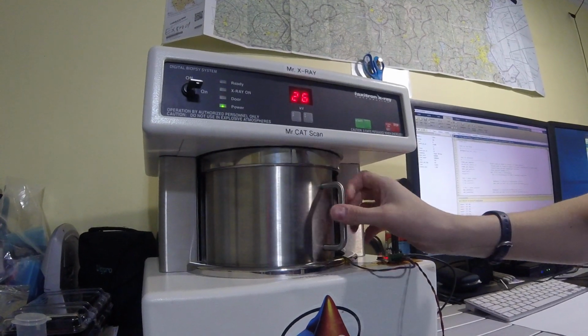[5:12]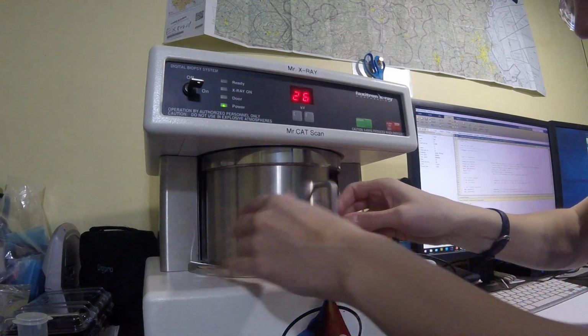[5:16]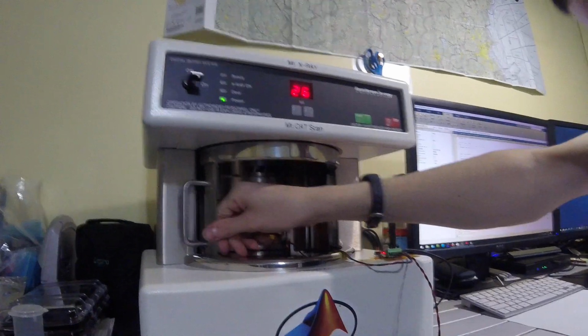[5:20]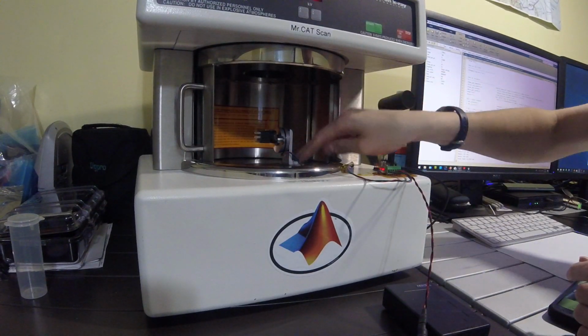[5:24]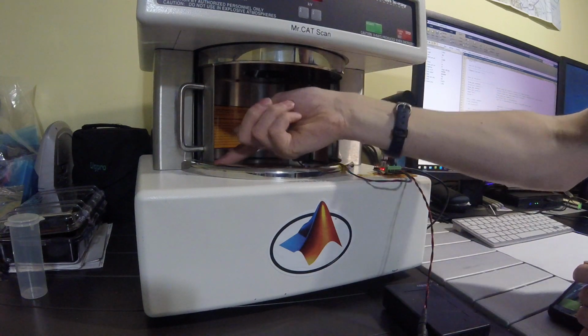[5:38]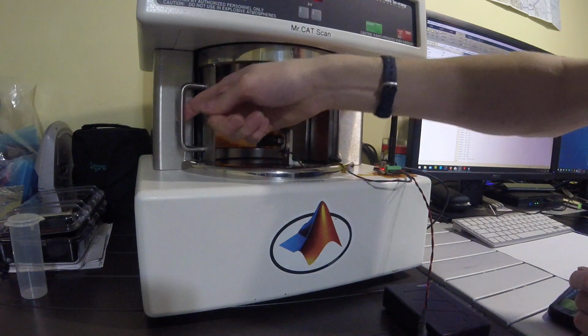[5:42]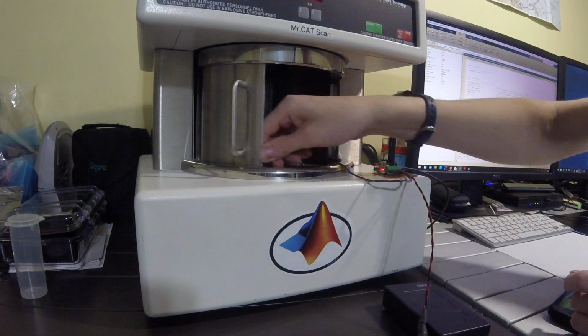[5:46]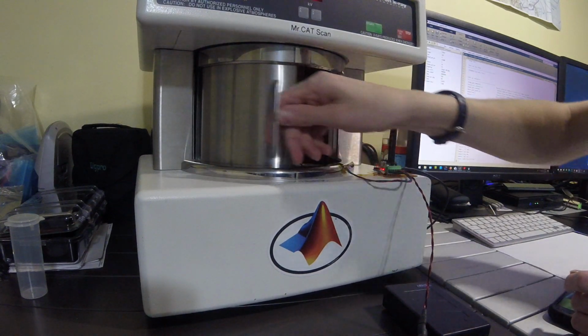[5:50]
around the labyrinth seal. So with the X-ray shield, it has an X-ray shielding door, and of course it has a door interlock, so it will not activate the X-ray generator unless the door is closed. Of course, that should never be bypassed for safety reasons. And the stepper control is actually mounted on a right angle bracket here. And there's a part of a switch, which is just mounted over the X-ray detector, which it can rotate. And the wires, there, because this is a re-entrant seal, basically just has a U-shaped channel for the shield to move in. The wires are actually thin enough to just snake under that shield.
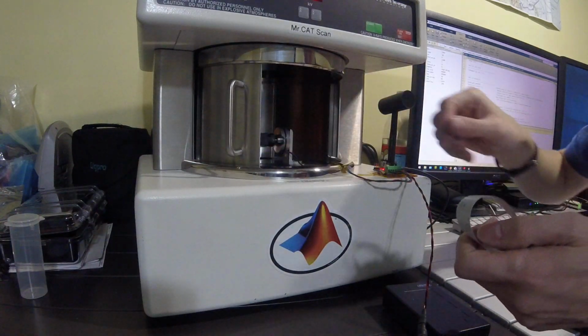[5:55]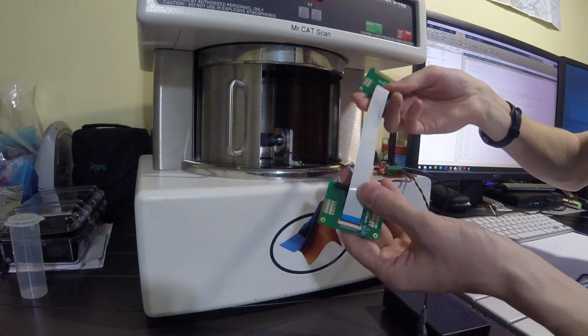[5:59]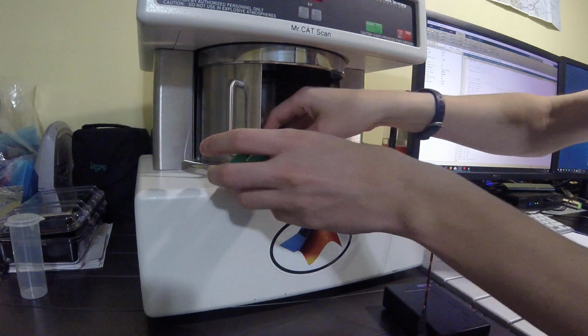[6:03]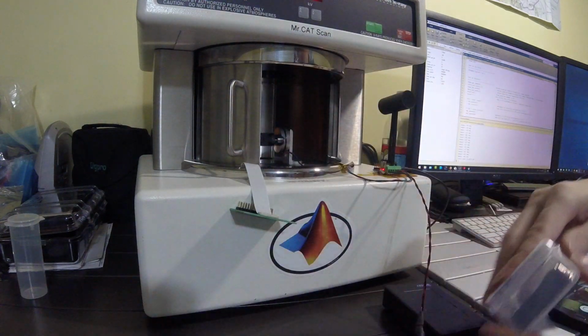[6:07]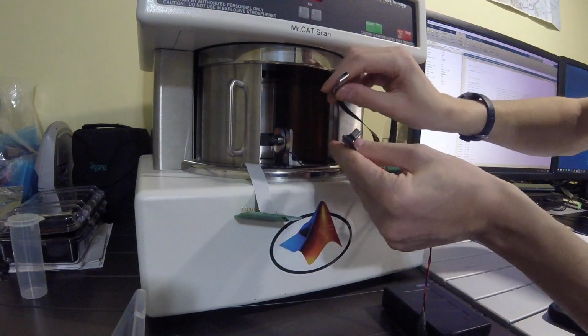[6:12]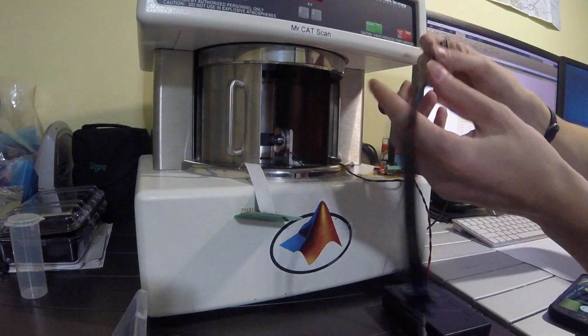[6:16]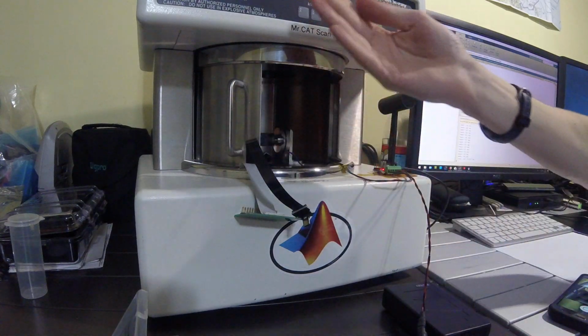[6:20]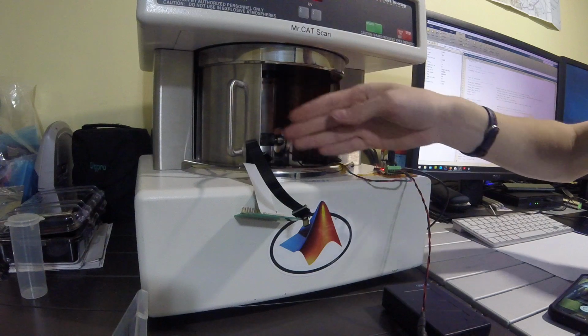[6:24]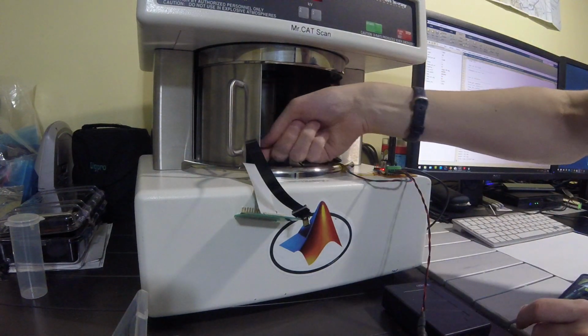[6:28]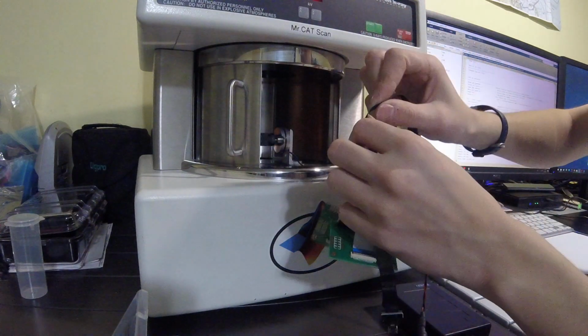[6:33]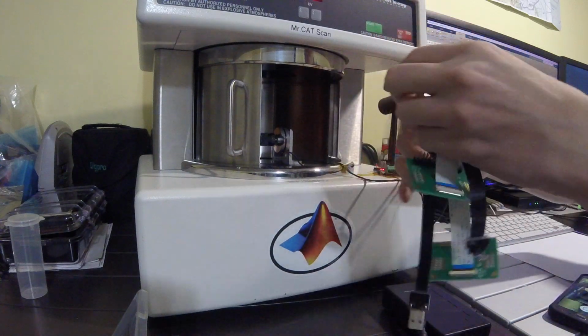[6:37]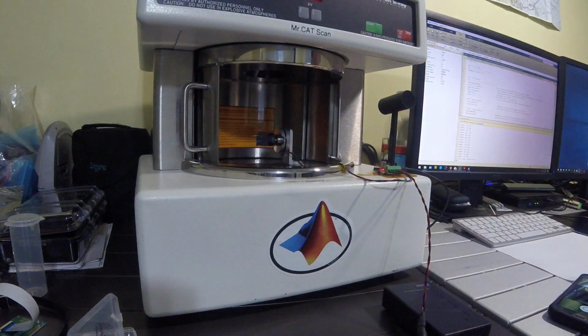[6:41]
Now, if you wanted to put other things into the X-ray cabinet, you could also do so with a flat flex cable. So if you take a flat flex cable with a breakout board, you can also thread that easily in through the shielding assembly. And you can also buy flat flex cable USB adapters on Amazon. So if you wanted to run a USB connection into the cabinet, you could also do the same thing. And these will just snake right under the shield. It doesn't require any modification of the system. There's about a 16th of an inch gap under the sliding shield part. So these cables are only maybe 4 thousandths of an inch thick or thereabouts. So those will easily fit in.
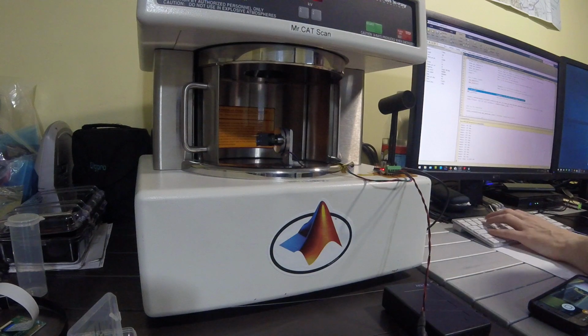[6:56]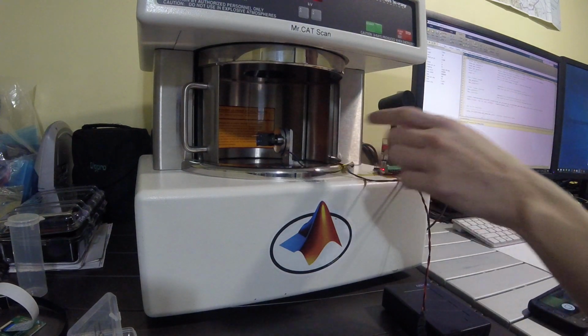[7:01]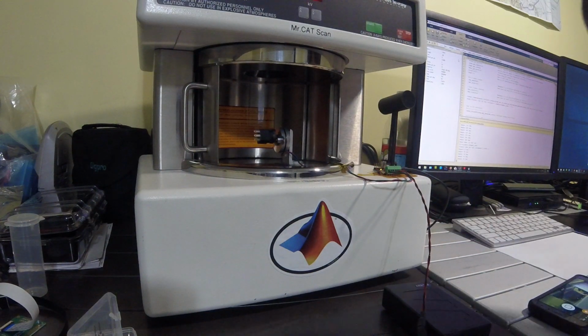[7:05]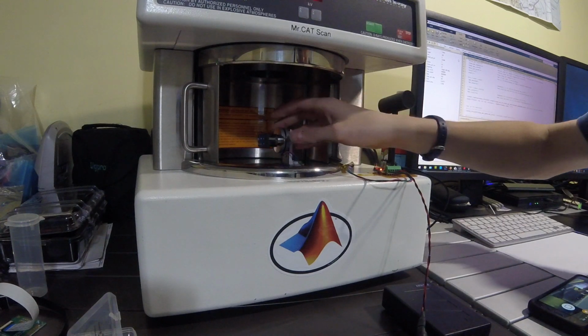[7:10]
So now, running this same test, it's going to require some reconfiguration of the motor, but with the same test we can see that it's activated. It'll do the same thing, and it'll take 360 degree steps. And this is just a test of the stepper motor, it's not actually X-raying anything at the time,
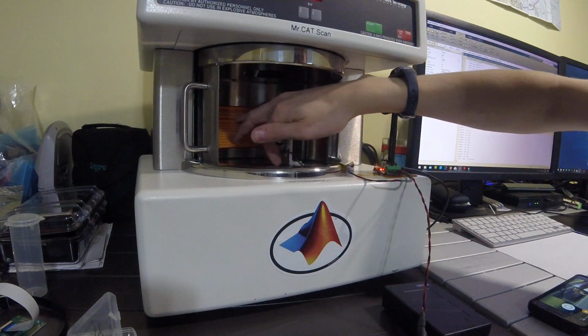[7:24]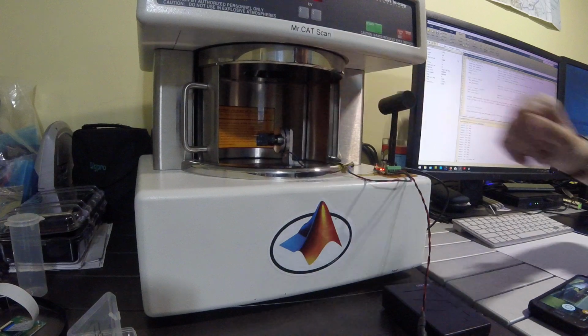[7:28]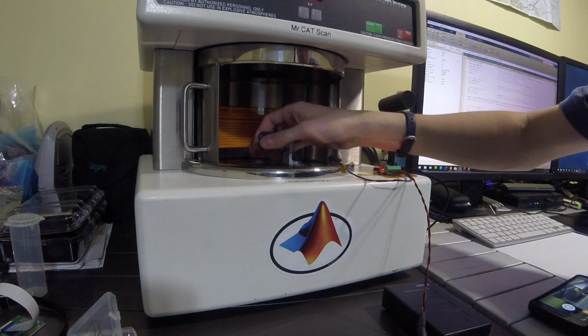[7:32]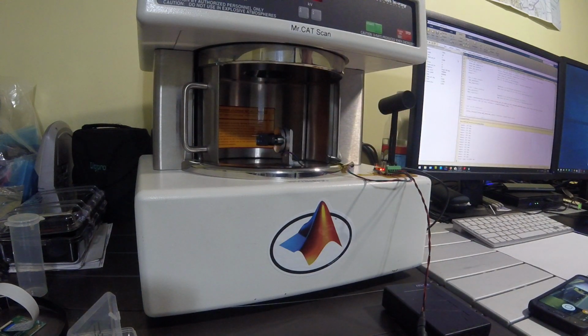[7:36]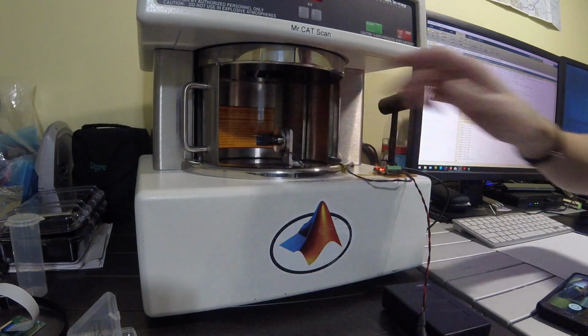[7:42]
but if this was X-raying, the X-ray beam would come down from the top, it's a cone beam, and it would X-ray the object, which would then be detected on the Hamamatsu flat panel detector, which is in the bottom. And then this would store the data in between steps. And then later on reconstruct the CAT scan. So another video I'll show how that and the flat panel sensor software interface works.